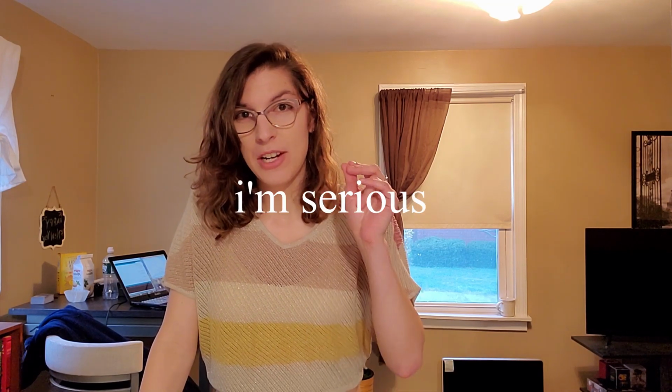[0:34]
I'm very excited because we're about to start building the thermocycler. If you have not seen why I'm building a thermocycler or what project I'm actually working on, I highly recommend you click this video right here.
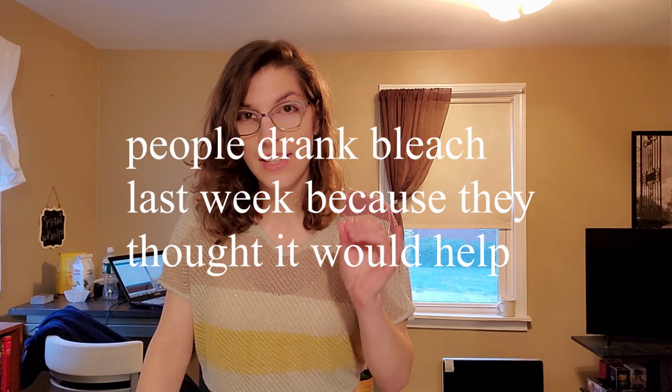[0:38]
Secondly, before we get started, it's important to understand that this is for science and informational purposes only, and only for curiosity. I know it's really exciting at the thought of being able to make a test at home, but that does not mean it should be a substitute for any professional medical opinion. This is the internet, so I want to make sure that everyone is very clear to not try this at home for reasons other than purely for scientific pursuit. Disclaimer aside, let's build this thing.
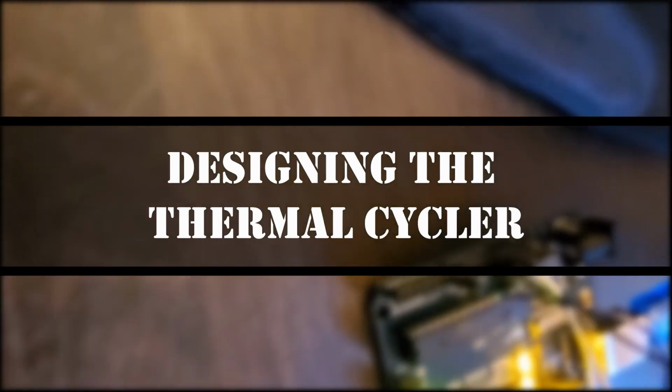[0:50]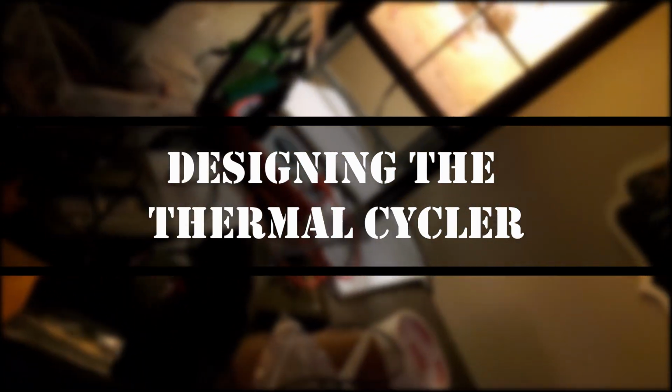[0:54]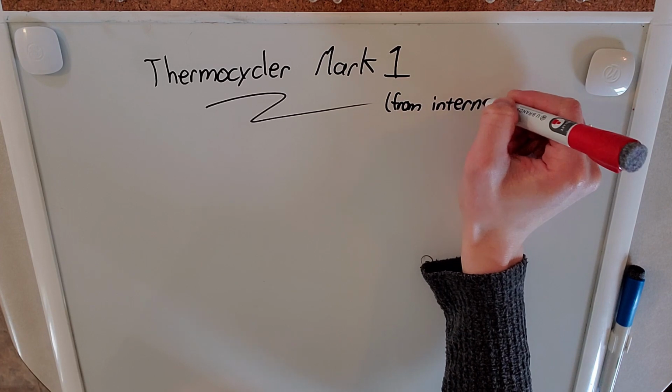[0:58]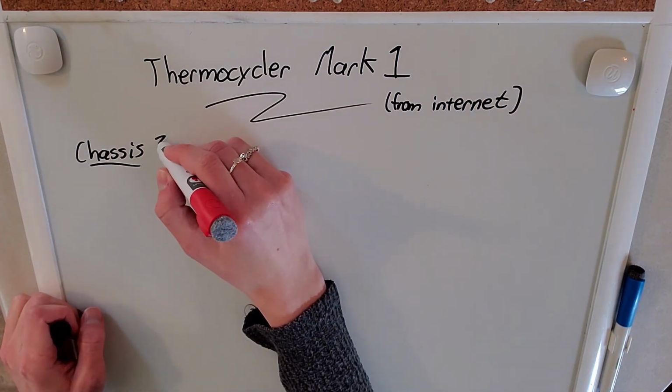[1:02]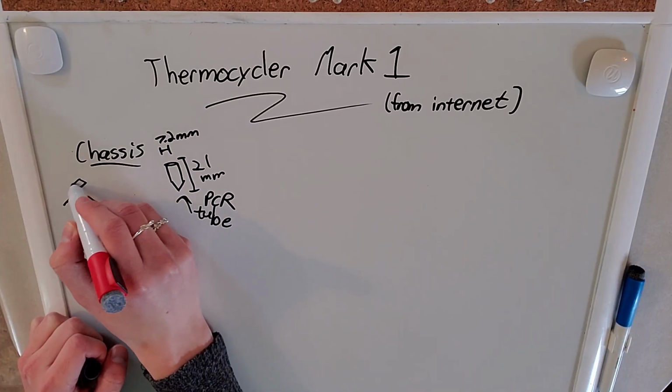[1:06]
Does that not look beautiful or what? So the thermocycler is a machine that goes from one temperature to another very quickly. In order to build this, we're going to need some sort of holder for the test tubes. That's what this chassis is going to be.
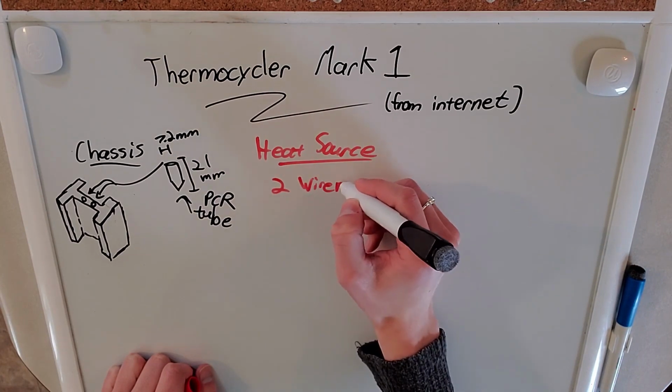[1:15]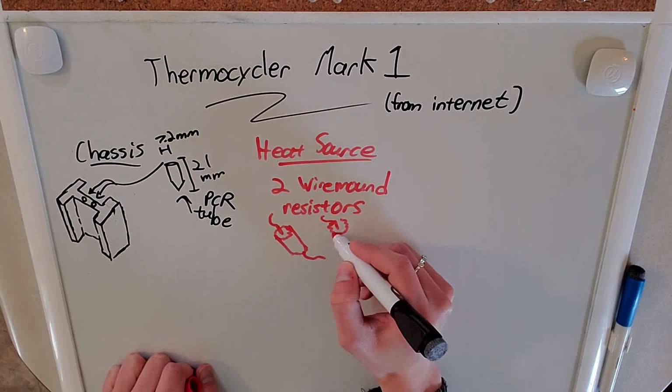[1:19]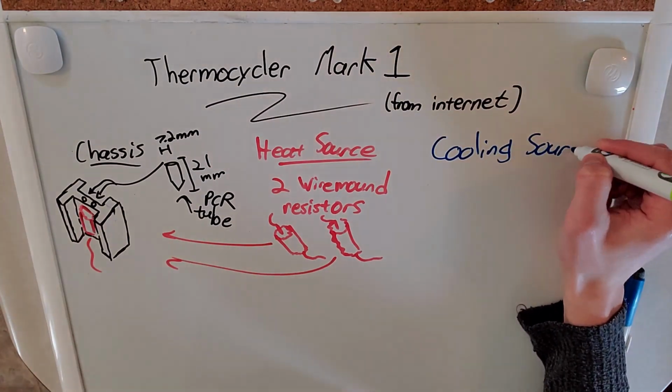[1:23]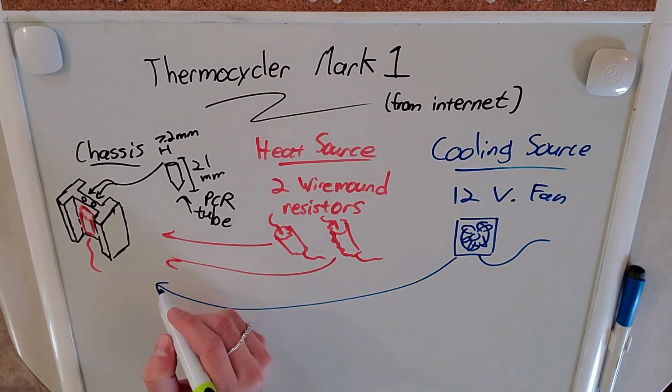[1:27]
It's going to be made out of aluminum, so it conducts heat extremely well, and it's going to have two holes in it to fit both test tubes. In the indents, there's going to be spaces for the heat sources, which are going to be two wirewound resistors. The current's going to flow through those resistors and heat up the chassis. For the cooling, we just have a simple 12 volt fan that's going to provide a bit of cooling.
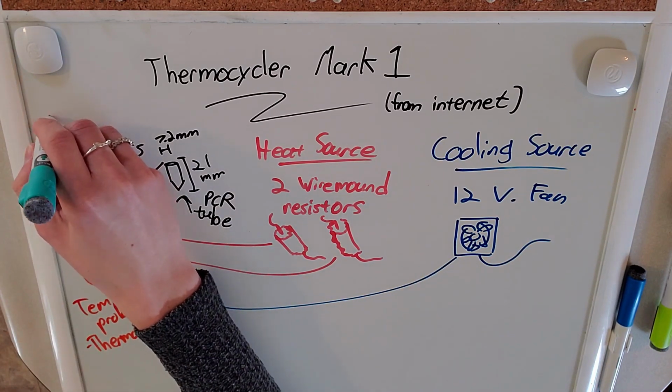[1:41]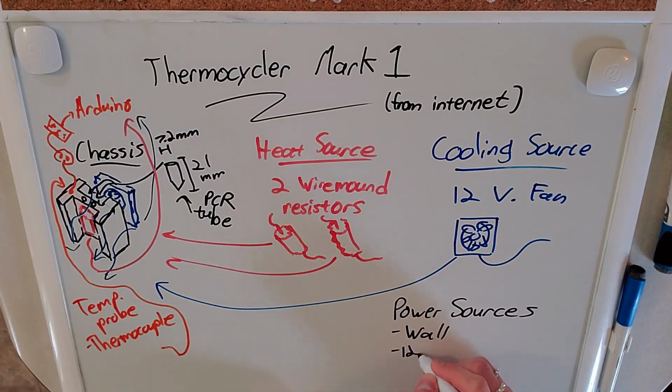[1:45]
Now to sense temperature, we're going to be using a thermocouple soldered into a thermo amplifier. This is going to turn thermal energy into voltage that the Arduino can read. And that's pretty much the entire design. So let's get building.
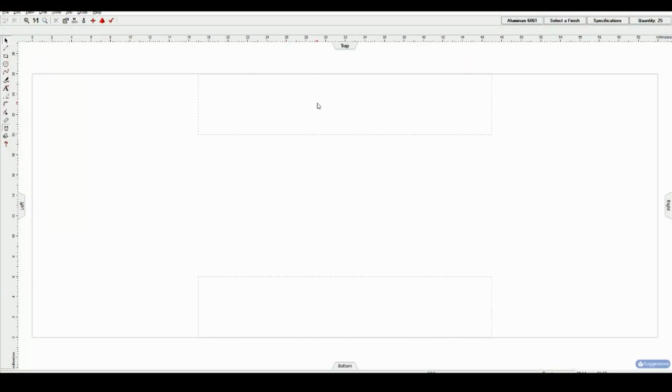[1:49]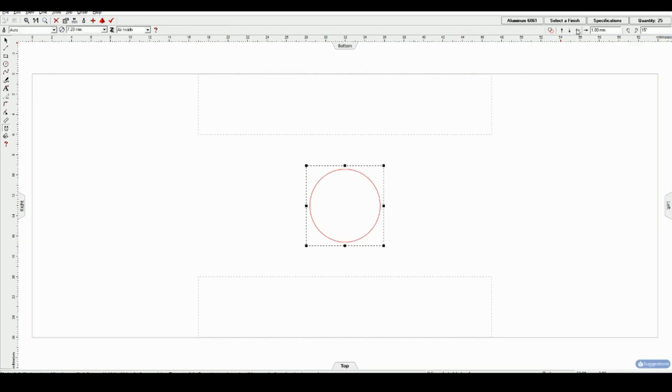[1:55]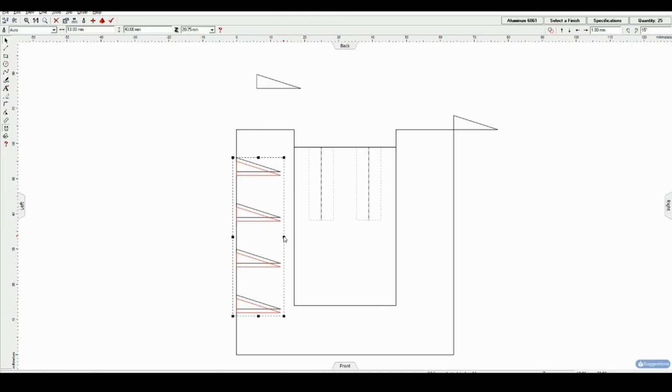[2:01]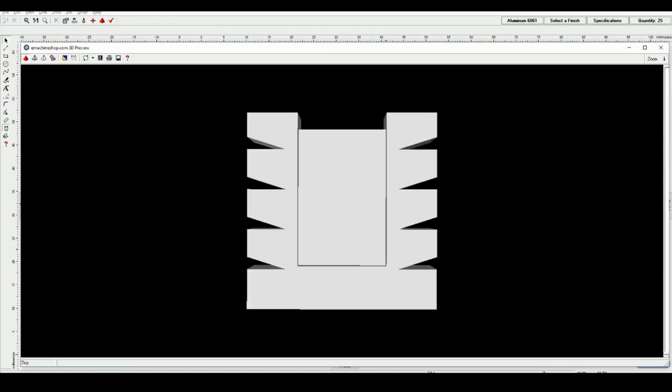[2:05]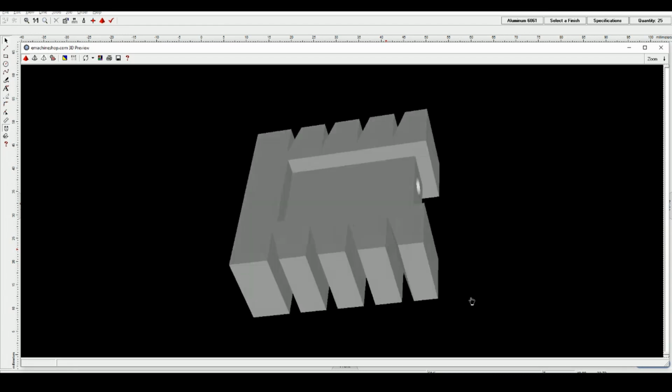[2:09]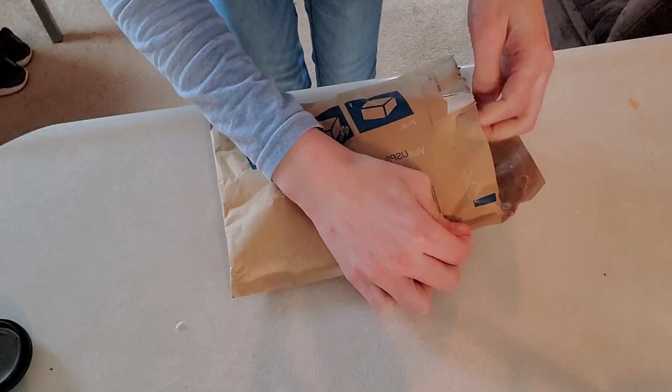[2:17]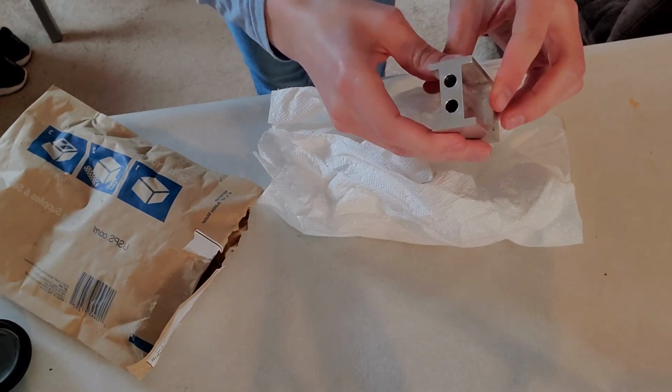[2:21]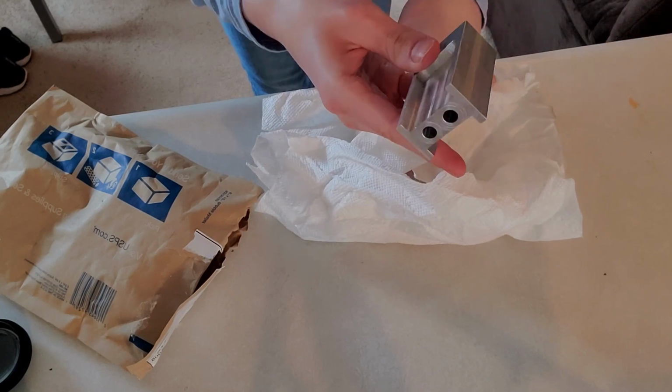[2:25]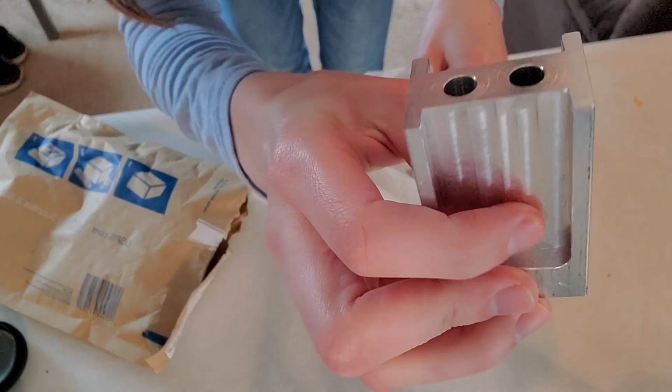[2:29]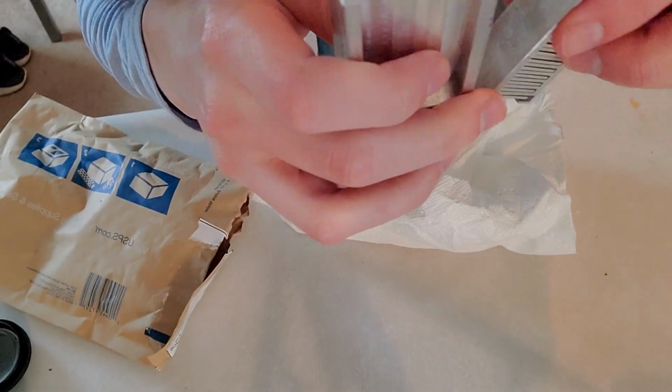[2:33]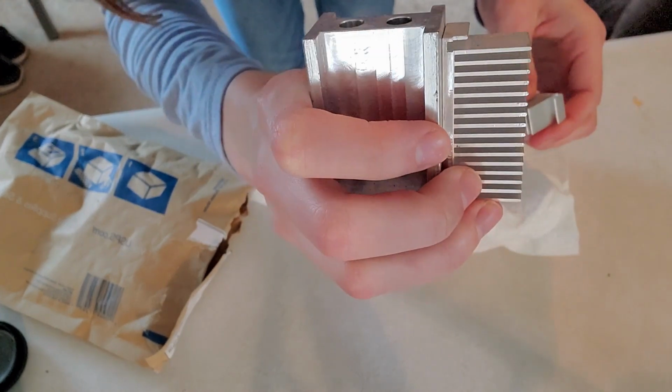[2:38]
Guys, it came in! I'm so excited. Let's have a look at it. Oh, this is awesome. Oh, this is so cool. Look at that. This is where the resistors will go. This is where the tubes fit in. And this is where the heat sinks will go.
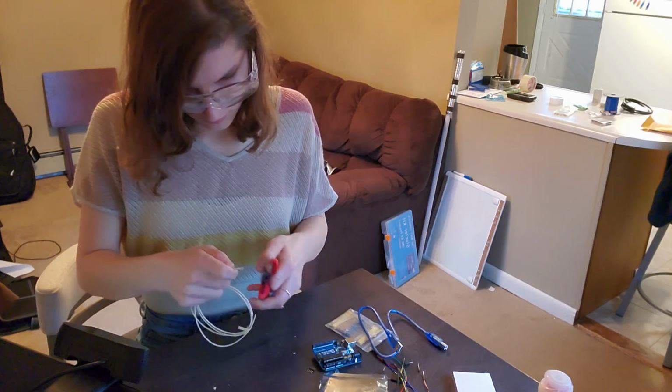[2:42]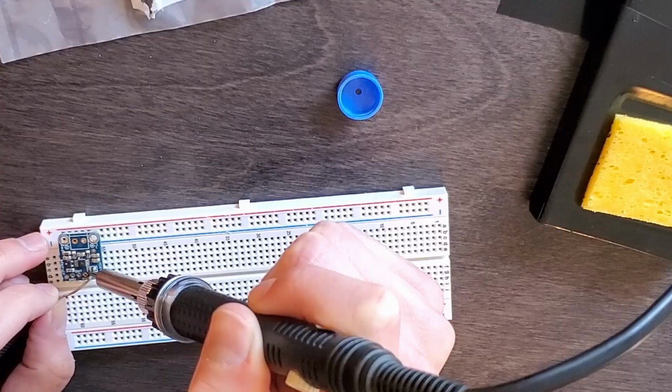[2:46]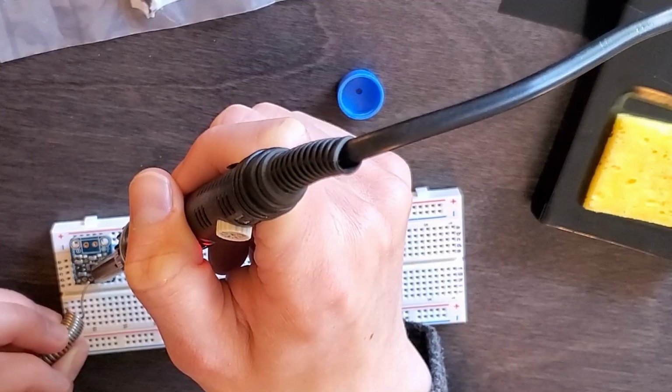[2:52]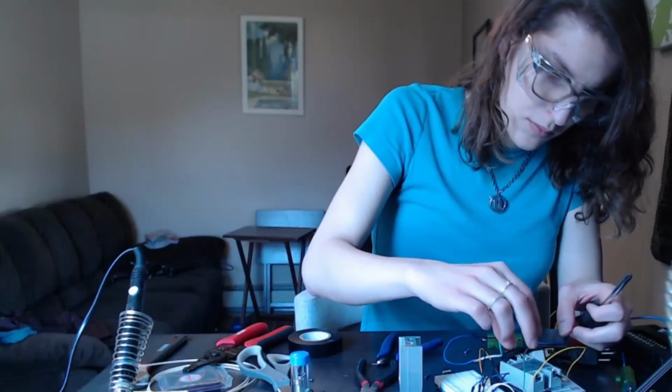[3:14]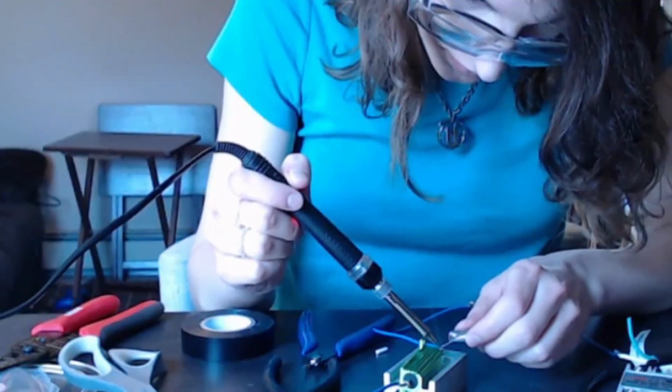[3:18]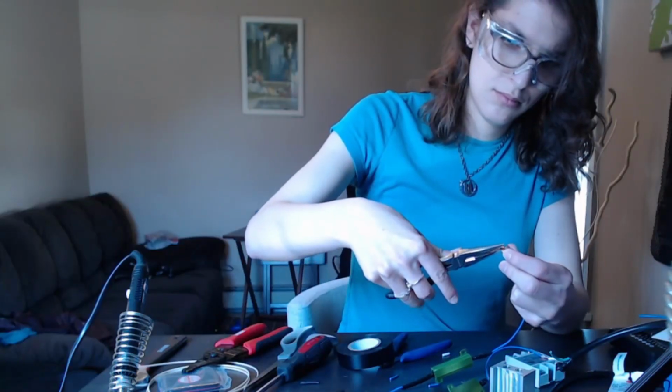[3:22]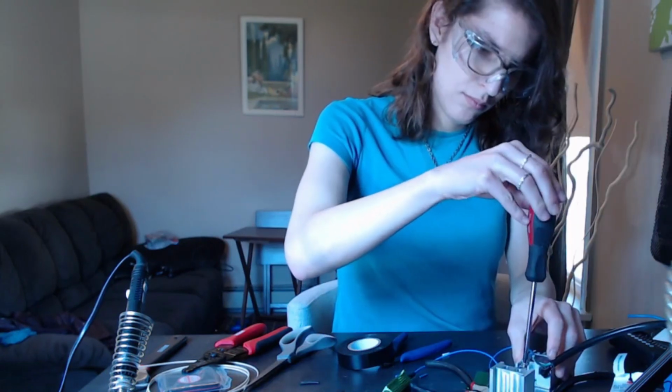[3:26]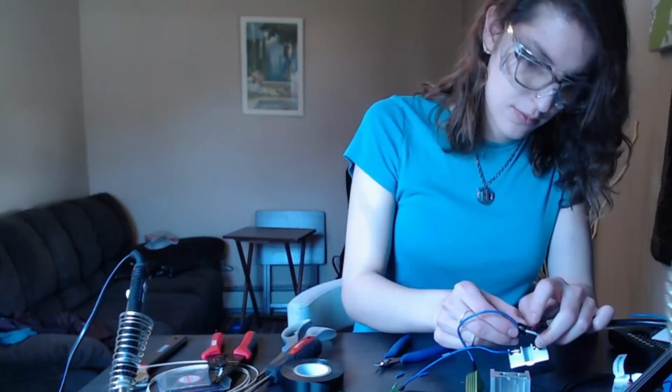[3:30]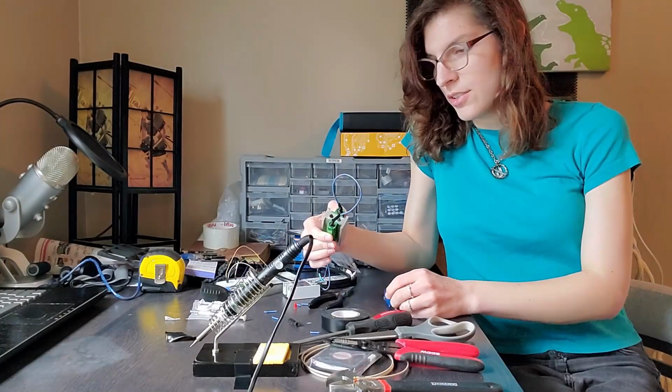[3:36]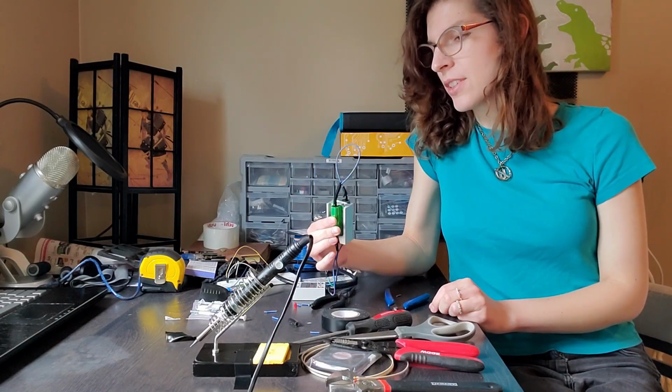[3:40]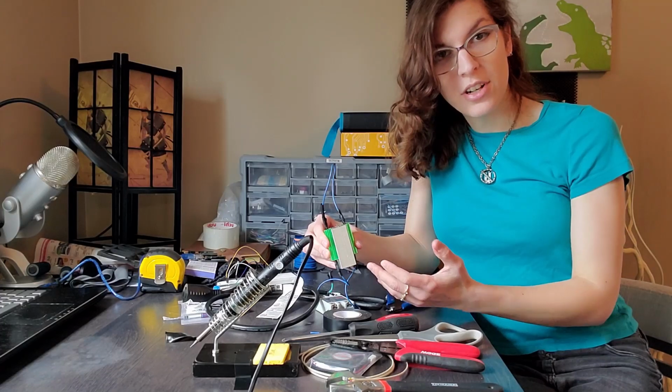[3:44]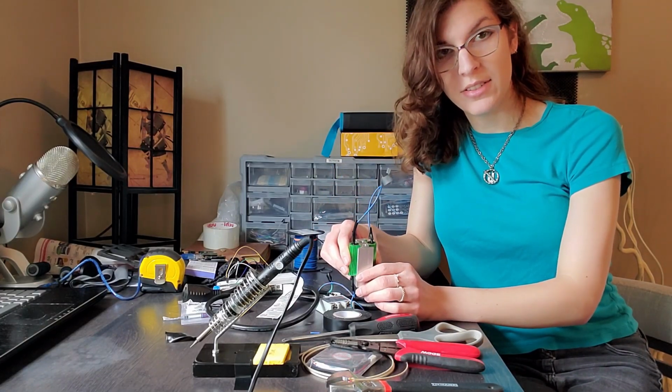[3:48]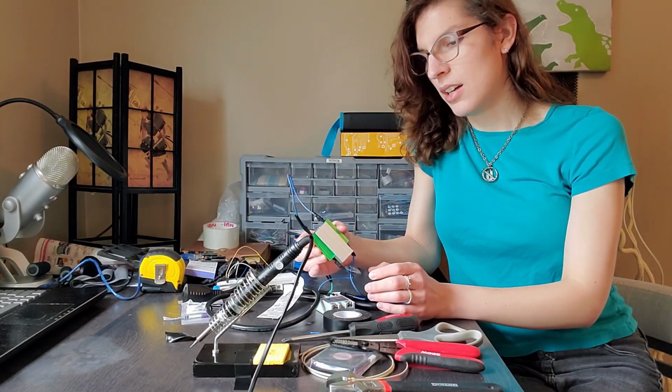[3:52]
As I was finishing up the construction on the resistor circuit, I realized there was trouble in paradise. Okay, so here's the thing. The more I'm building this, the less confident I am about it actually working. Traditional PCR machines increase the temperature by around 5 to 6 degrees per second. Using just two resistors to heat this thing up, I ran the numbers and it's not going to work.
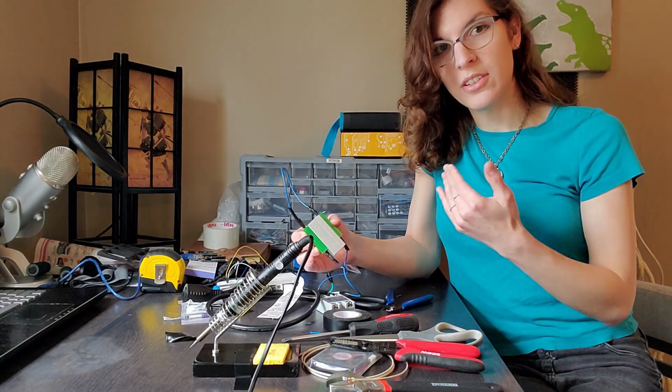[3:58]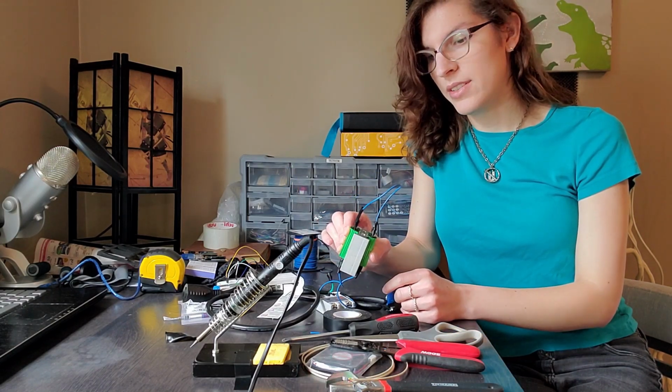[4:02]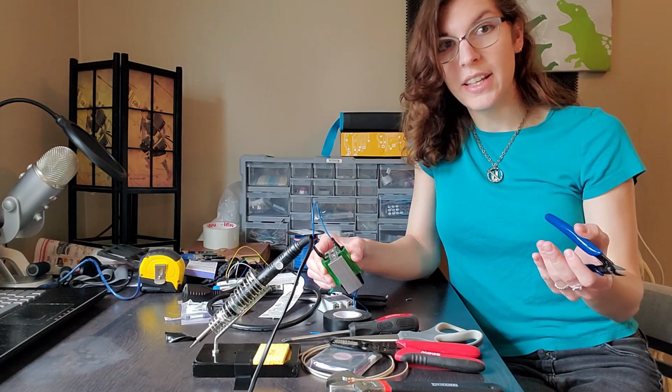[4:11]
I also looked on the blog post page and it said that the entire cycle time for this particular development was close to 3 hours, and traditional PCR machines take 45 minutes. This isn't just, oh, it'll take longer and that's fine. The reaction will fail if it takes too long. If the temperature doesn't ramp up or down the right way, you're not going to have the best and most consistent replication of your DNA.
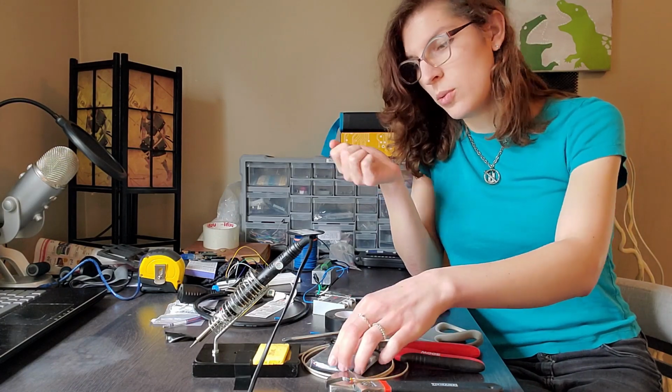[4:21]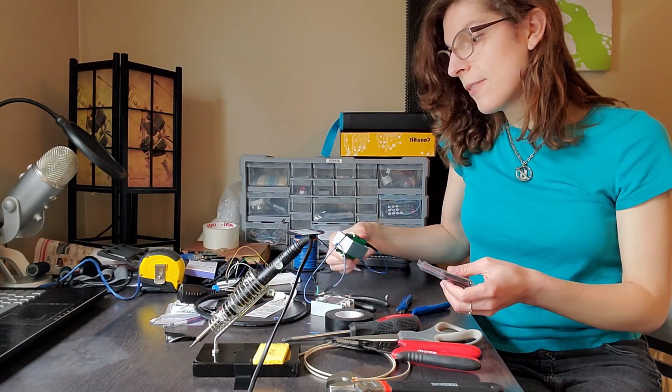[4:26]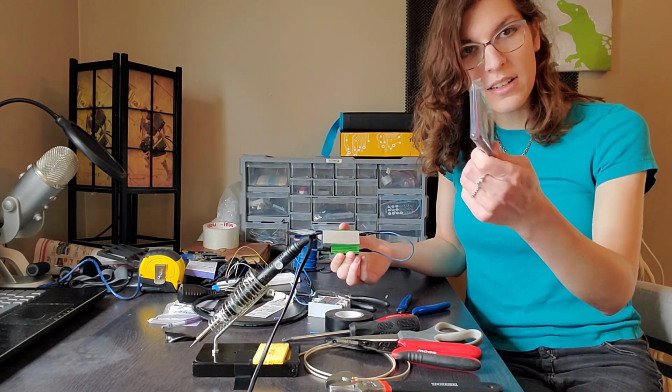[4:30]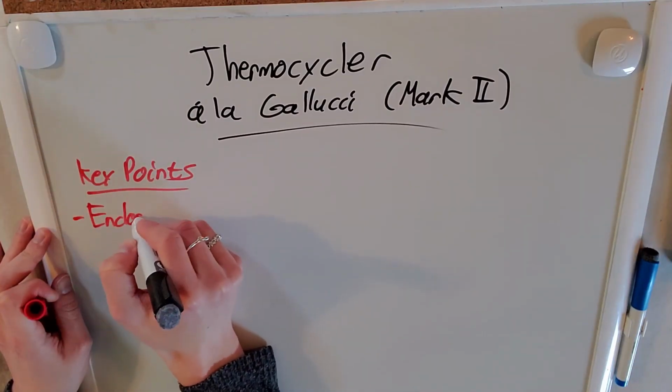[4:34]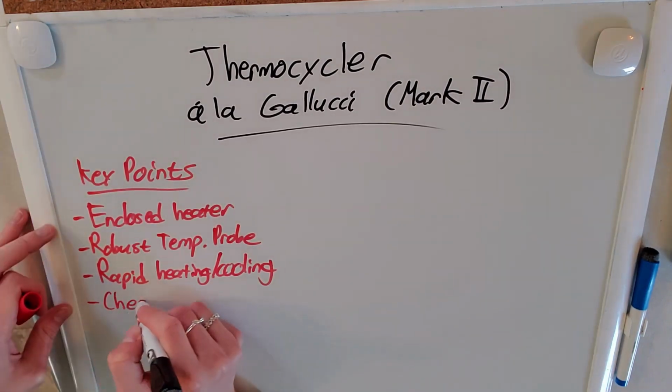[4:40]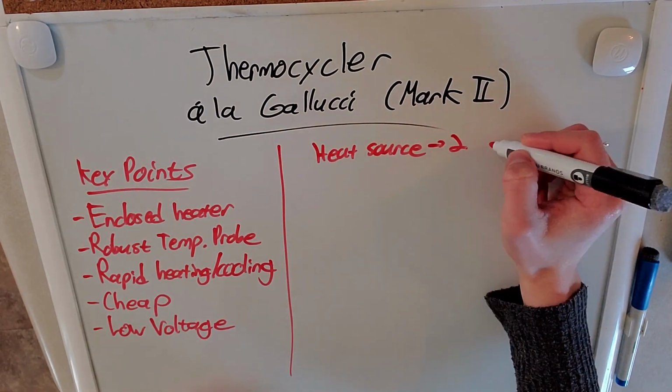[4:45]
The other problem is the cooling. There is no way you're going to be able to cool something 5 to 6 degrees per second that's this size with a fan. Okay, to the whiteboard, I guess. And so with that, I tried to fix some of the thermodynamic issues that I had found with the original design. By enclosing the heaters in the metal, we get a more efficient temperature conversion. And by using a thermistor instead of a thermocouple, we could have a more robust temperature probe.
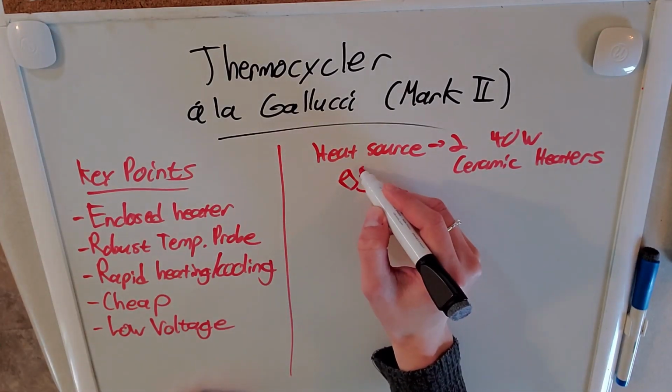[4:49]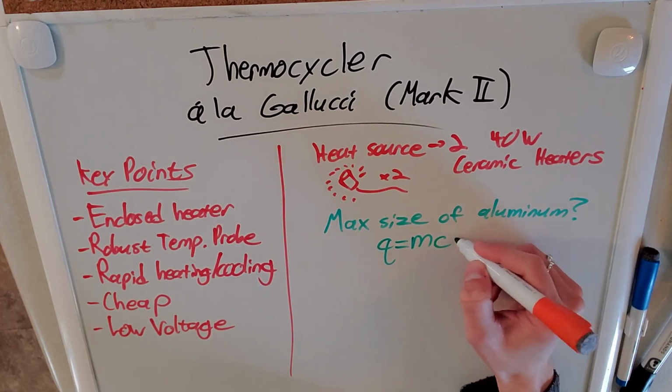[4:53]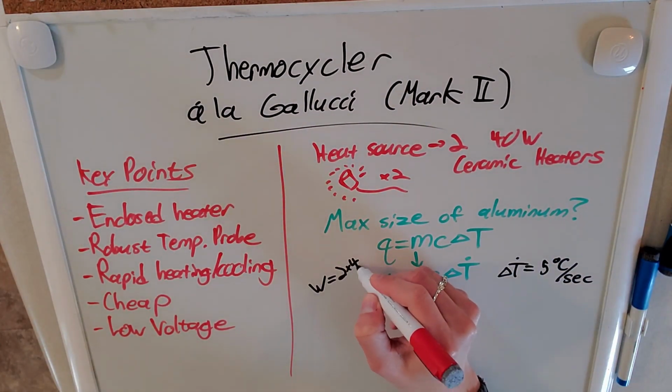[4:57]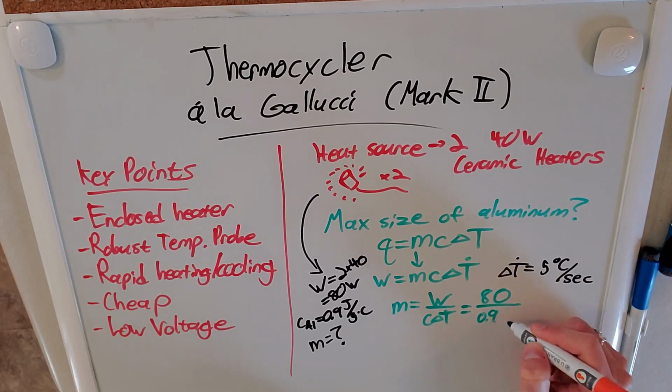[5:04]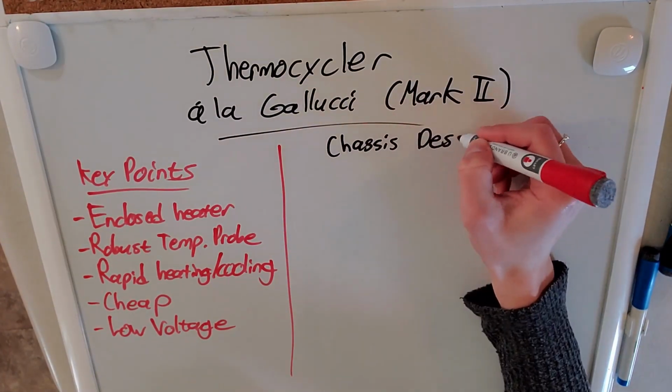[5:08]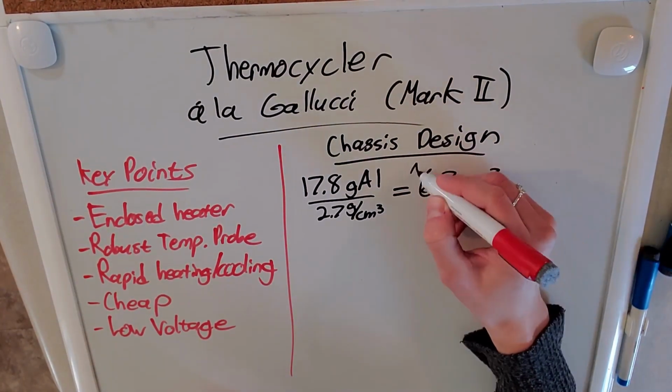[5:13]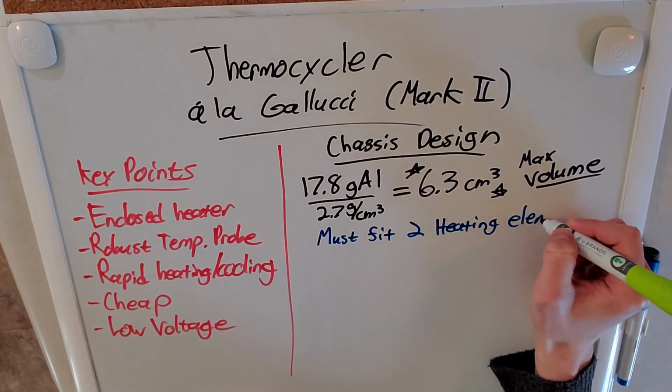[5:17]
Now, to determine the rapid heating and cooling rates, I decided to use two 40-watt ceramic heaters. But we need to first figure out how much aluminum was needed to actually be able to get that 5-degree temperature increase per second that we were looking for. Once we found out how much aluminum we needed, then we had to translate that into how much volume of aluminum our chassis could be, which we used the density of aluminum for. That was pretty easy.
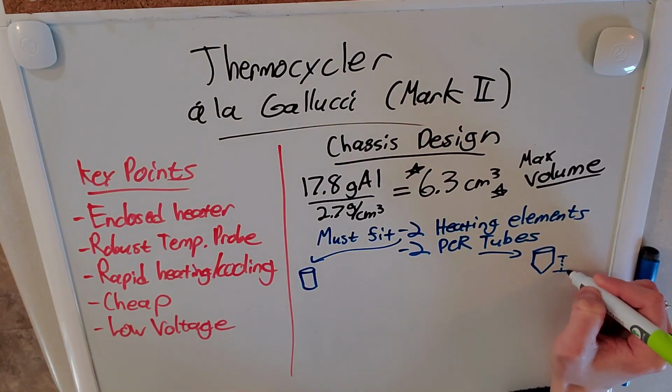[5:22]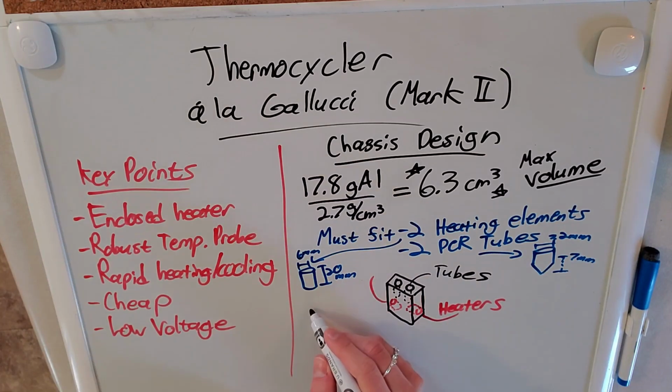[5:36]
Lastly, we just had to make sure that that volume of aluminum could be designed in a way that fits both of our heating elements and two PCR tubes. Taking the measurements of the heating elements and the PCR tubes, we found out that a very, very small block of aluminum, on the order of tens of millimeters, could actually house both the heaters and the tubes while satisfying the volume requirements that we found out using our heat transfer equations.
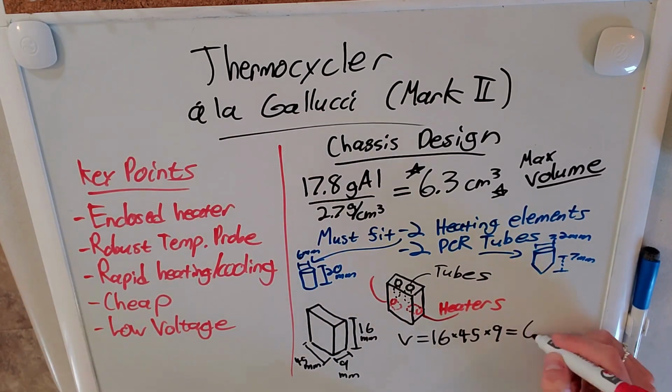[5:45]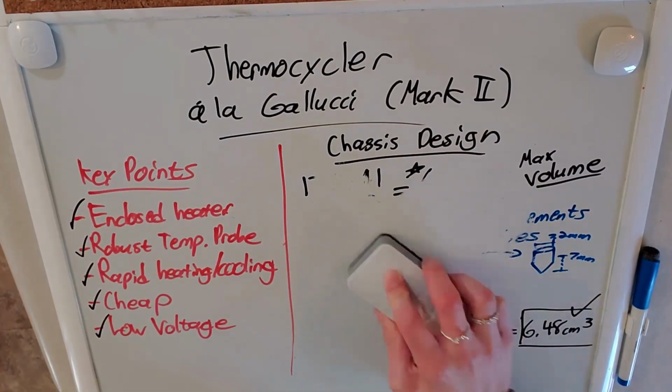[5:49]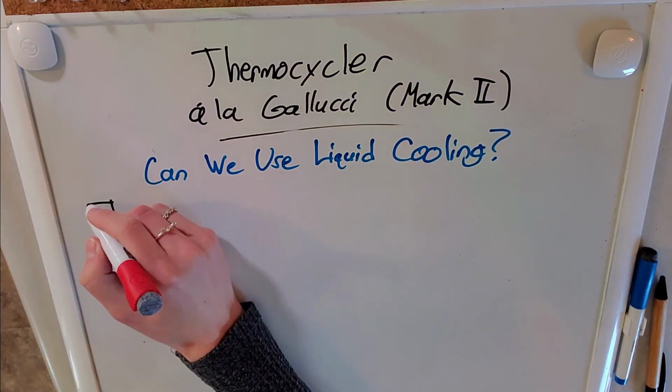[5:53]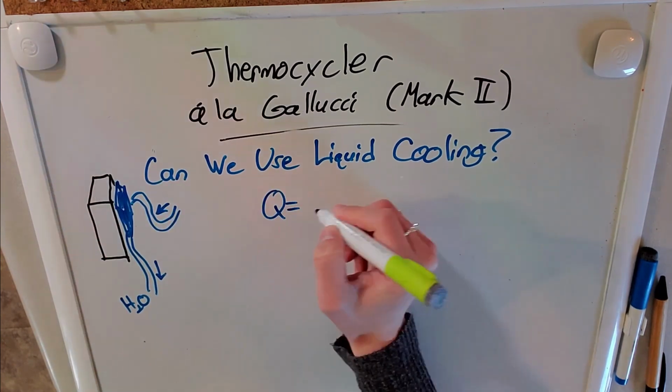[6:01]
Well, we took care of the heating, but how about the cooling? Like I said before, a fan wasn't going to cut it. I decided to use liquid cooling instead. We could take a CPU heat sink and pump cold water through it, and that would take away way more heat than we ever could with a fan.
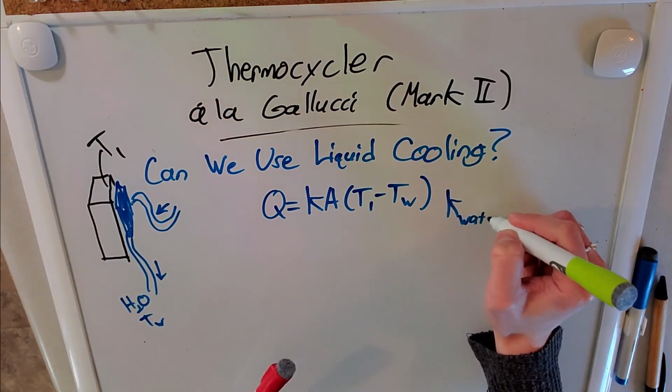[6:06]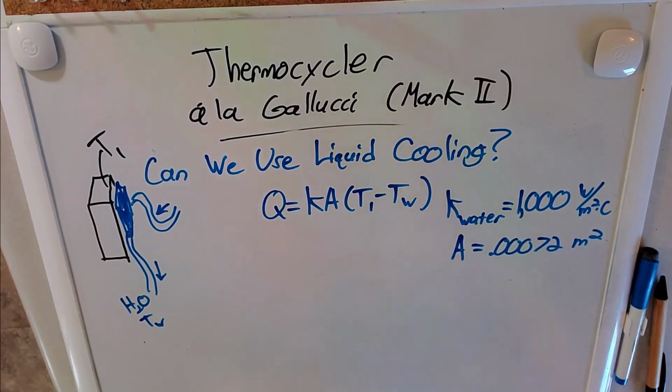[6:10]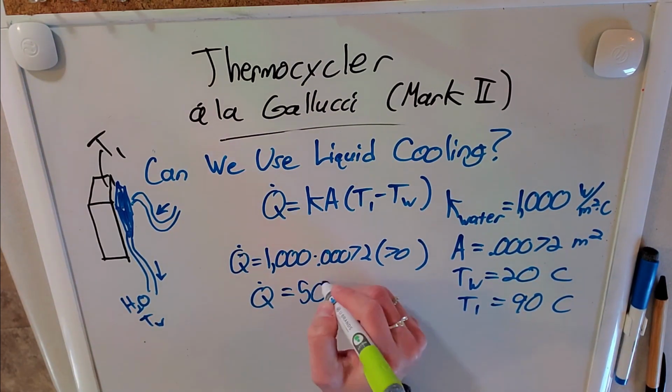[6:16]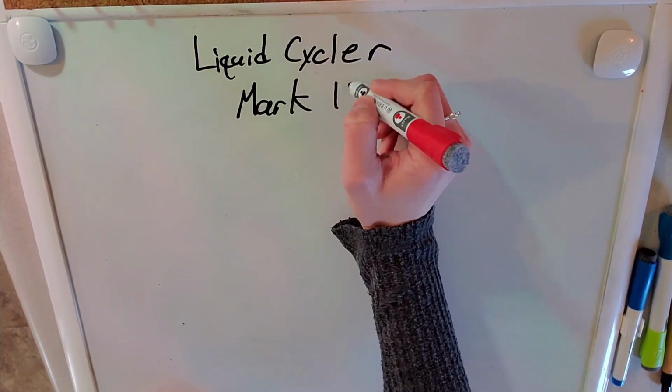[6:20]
Just to confirm that using a liquid cooling system actually gave us the right amount of heat, I just had to confirm that the heat it took away is roughly the same as the heat that the heaters would give to the aluminum block. And with that, my design for the PCR machine I call the liquid cycler is complete.
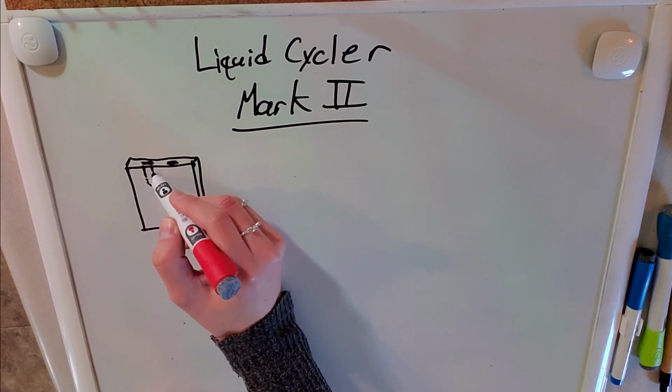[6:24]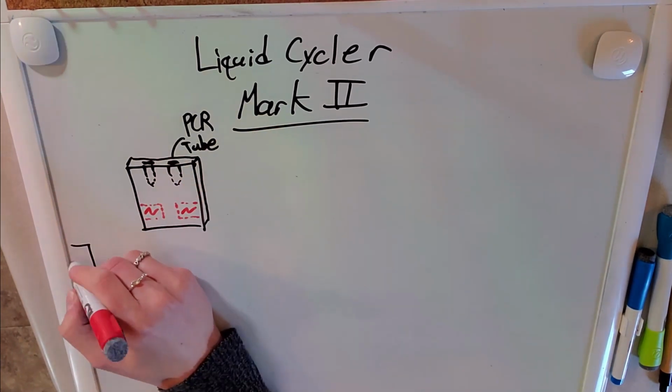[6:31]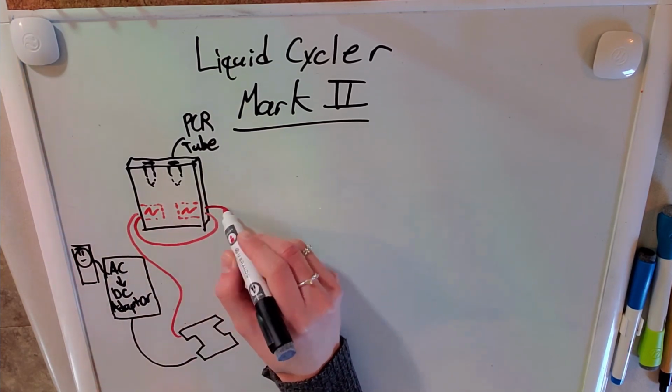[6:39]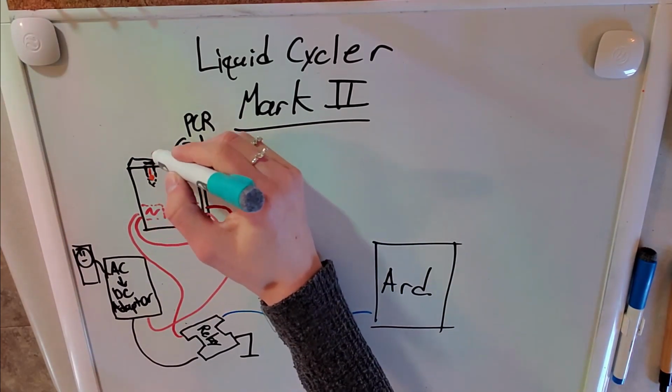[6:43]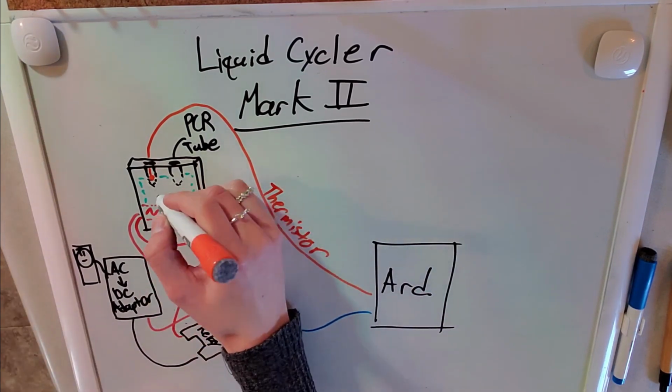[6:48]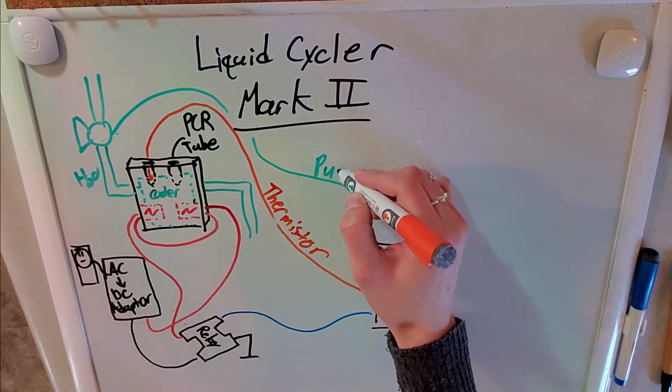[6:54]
So it's going to be a much smaller aluminum block than we had before, and the heaters are going to be inserted inside the block rather than just sticking off the sides. It's still going to hold two PCR tubes, which is good, and all it's going to use is an AC to DC adapter attached to a relay to power the heaters. The Arduino is going to handle all the decision making, the thermistor is going to be inside one of the PCR tubes, and the liquid cooling system is going to be glued to the side. So, with this basic design, let's go back to the real life me to construct it.
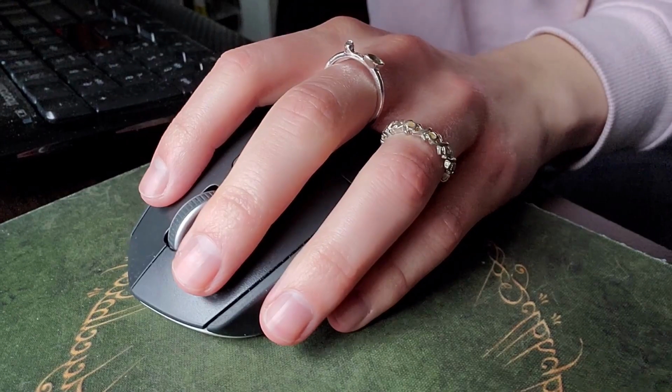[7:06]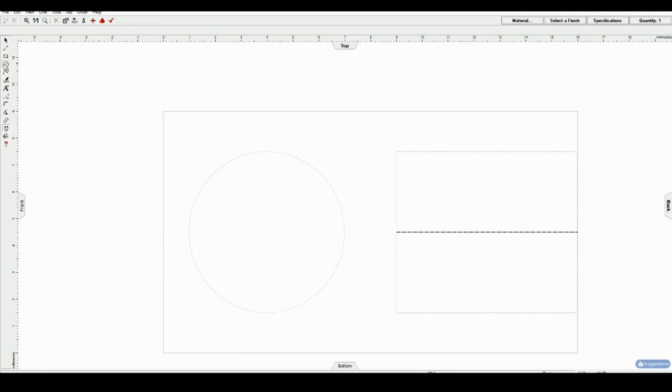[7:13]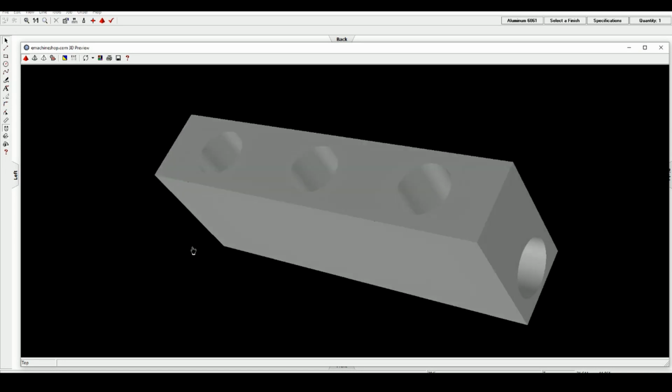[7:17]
This is what I actually look like, by the way. I decided to have three holes for the PCR tubes instead of two, because that'd be less aluminum to have to heat up, and also we could put the temperature probe in the middle hole.
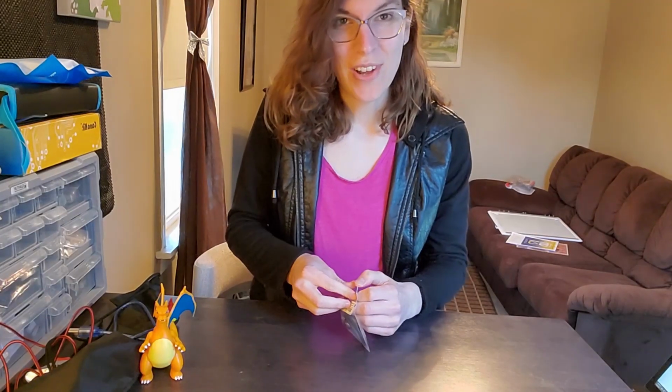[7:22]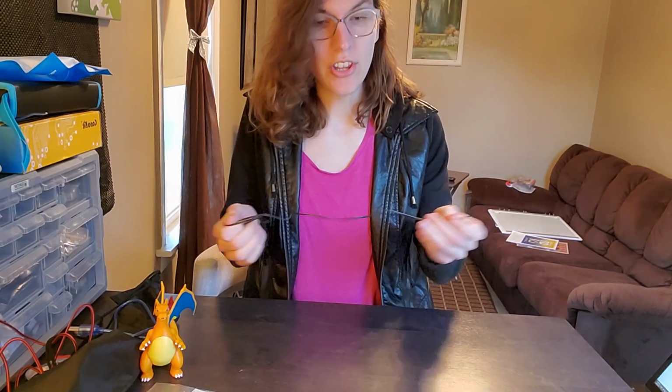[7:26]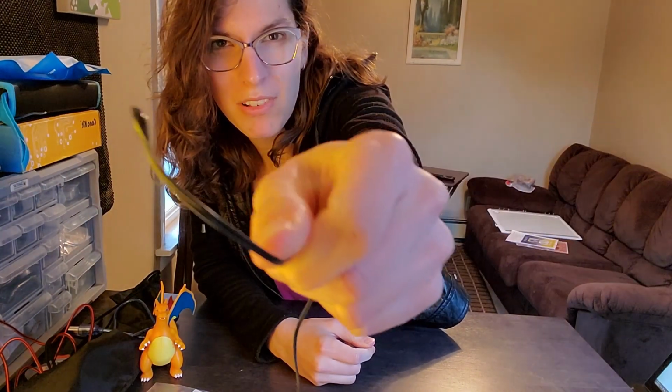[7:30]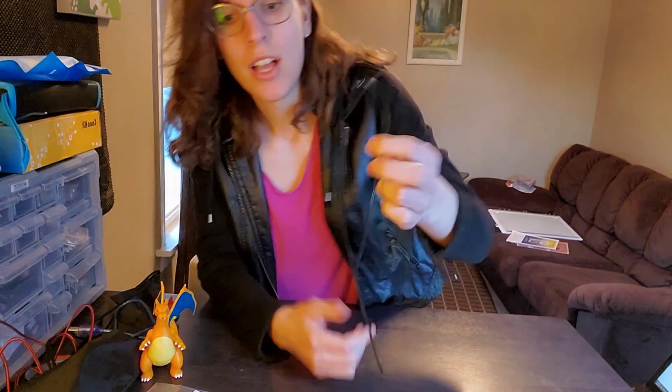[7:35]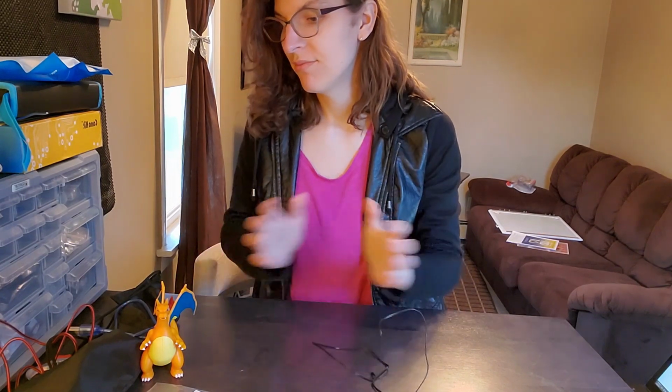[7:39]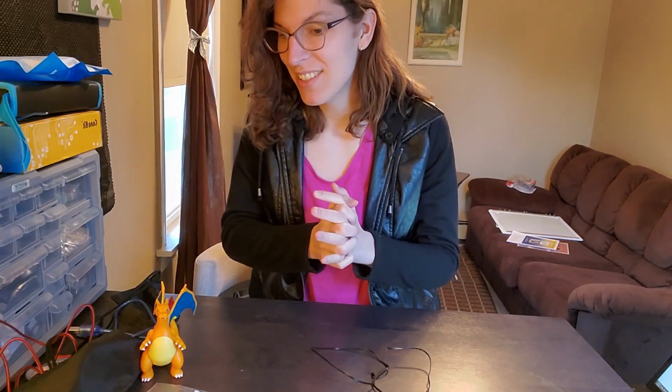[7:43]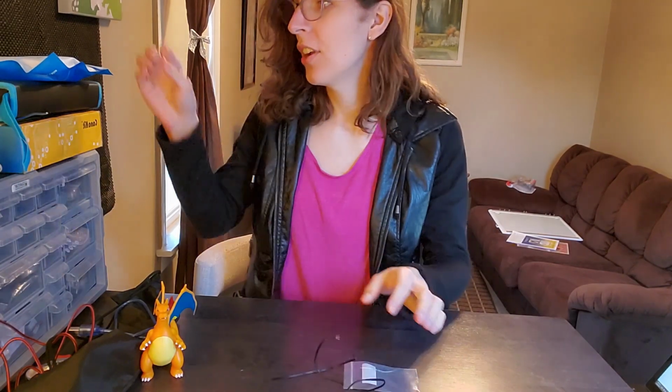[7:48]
All right, so I got the temperature sensor in. It's called a thermistor. Looks like this. It's this little bulb, which changes the resistance of your circuit based on temperature, which is great. So now we can use that with the resistor, put it all up in a breadboard, and get this party started.
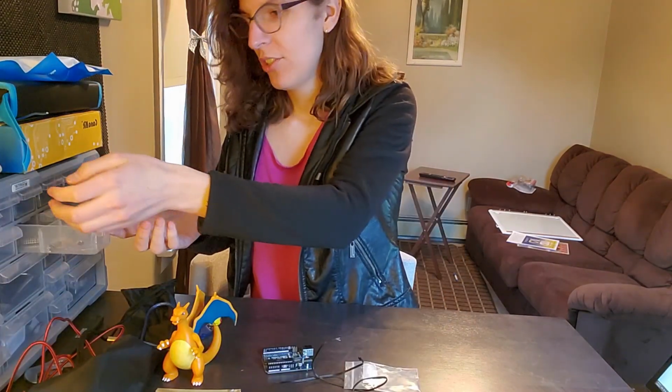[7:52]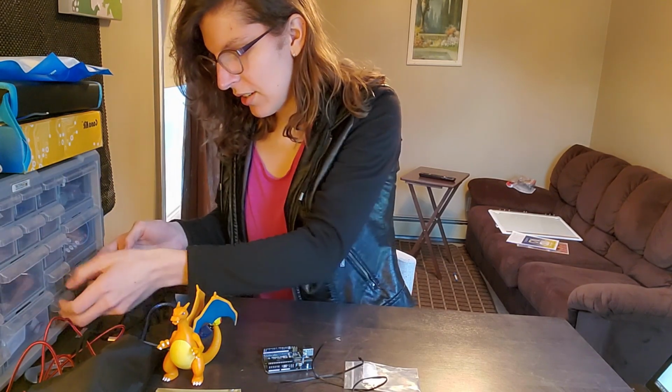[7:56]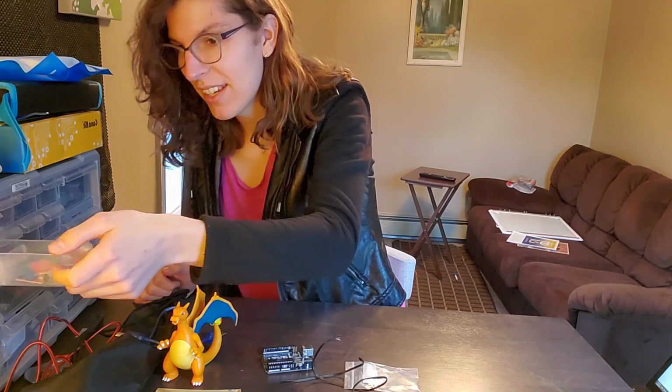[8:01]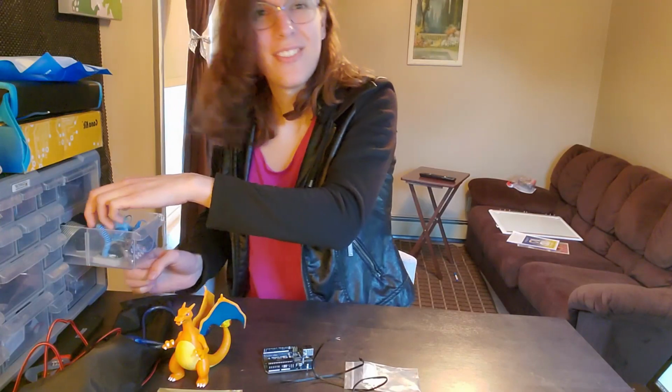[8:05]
I really should label these drawers. So, trying to find something. Wait, is this it? No, found it.
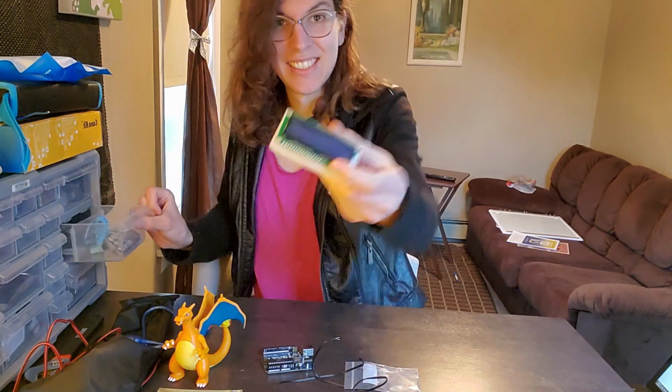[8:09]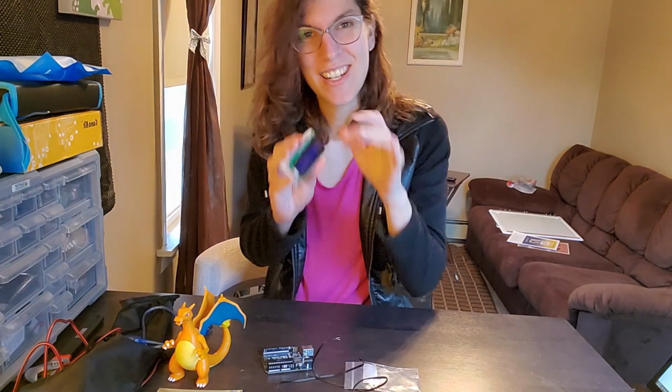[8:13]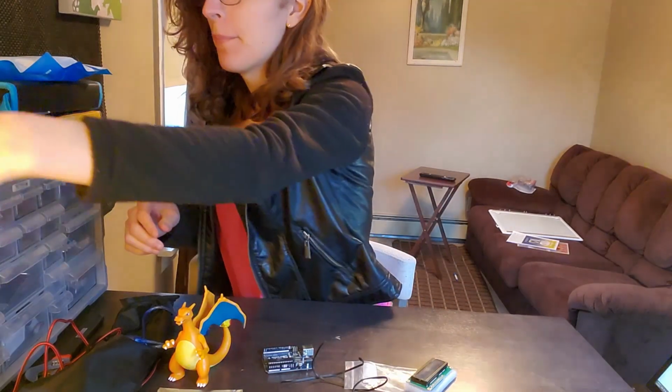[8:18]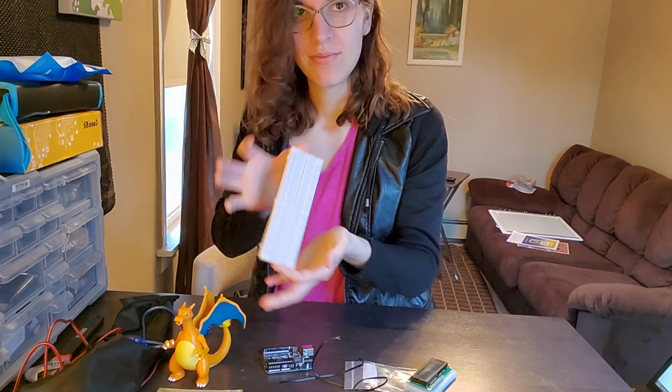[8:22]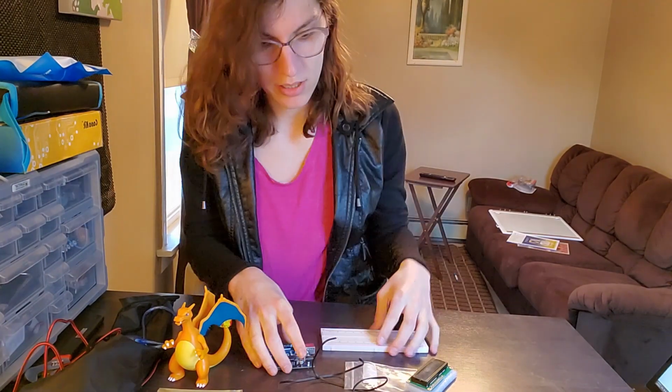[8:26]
This is gonna be where our temperature is displayed, and it's gonna be in nice little numbers, so it's gonna be great. I'm gonna connect that right up to one of these. Let's get cracking, shall we?
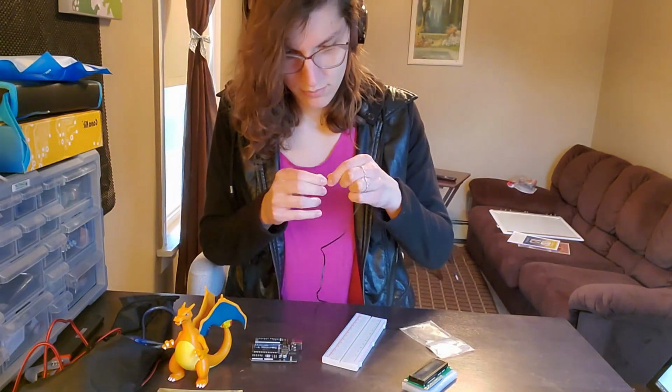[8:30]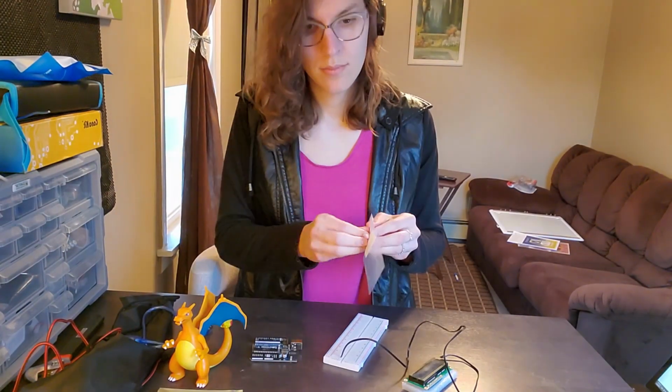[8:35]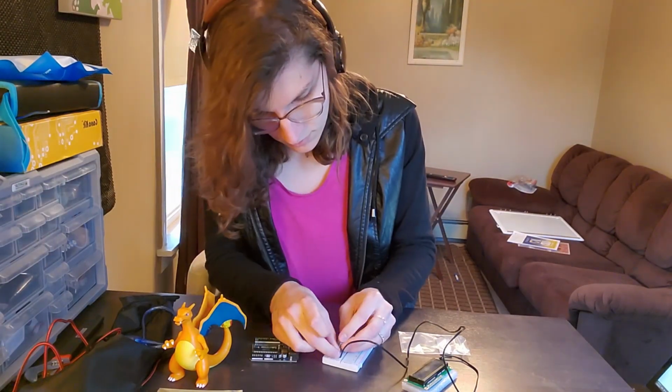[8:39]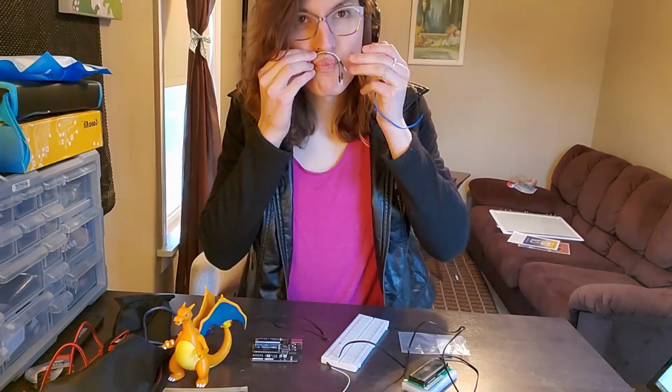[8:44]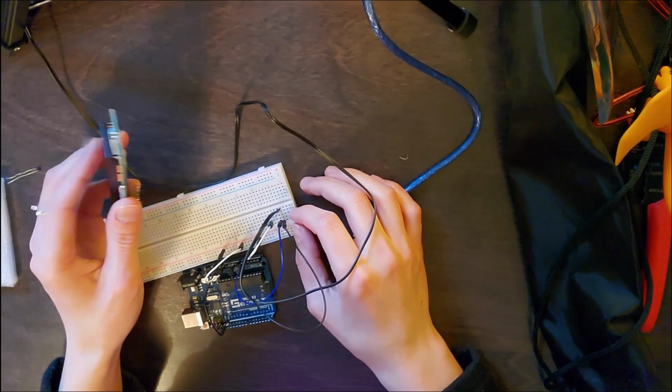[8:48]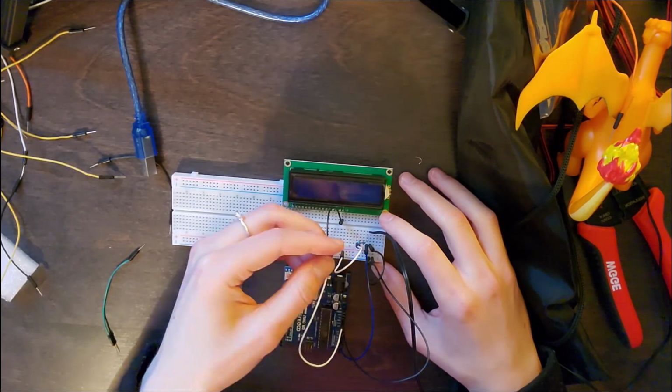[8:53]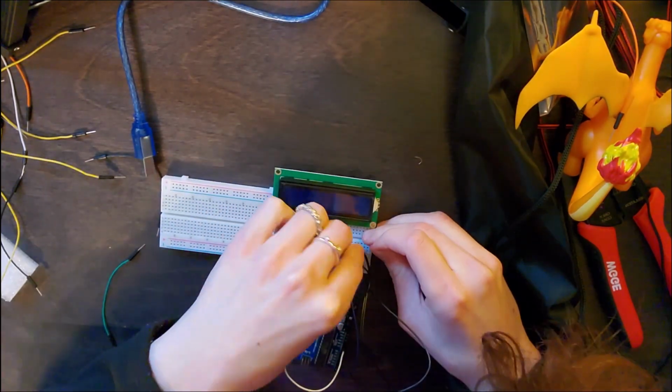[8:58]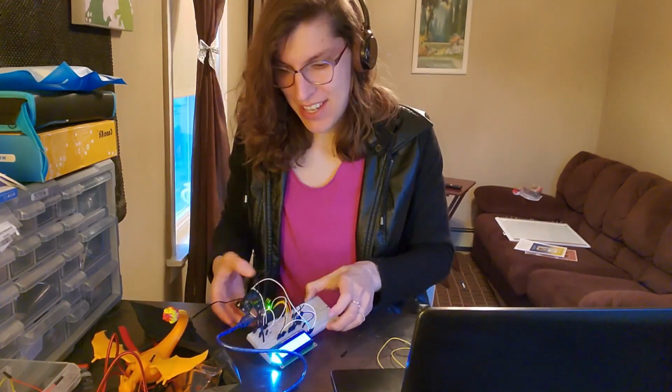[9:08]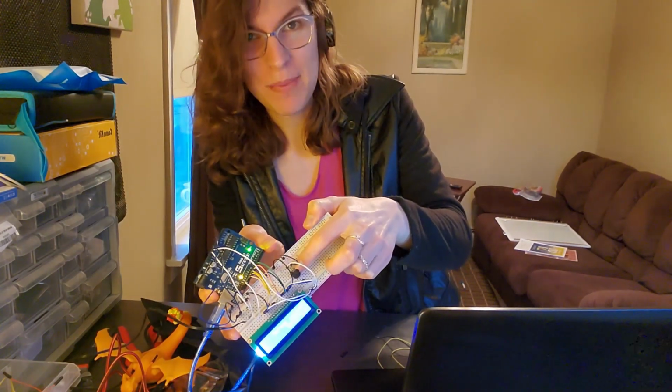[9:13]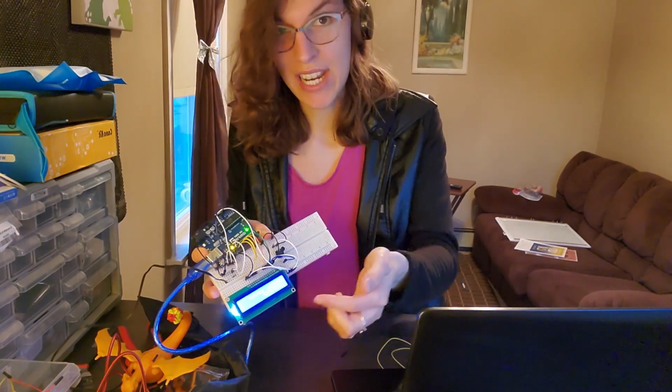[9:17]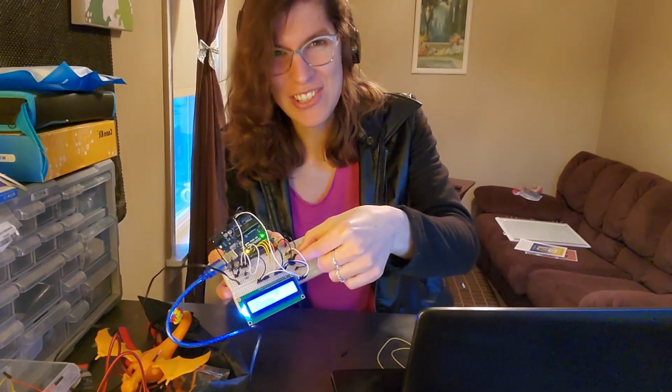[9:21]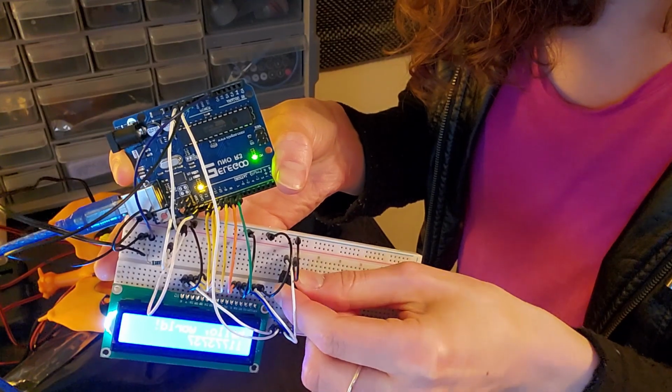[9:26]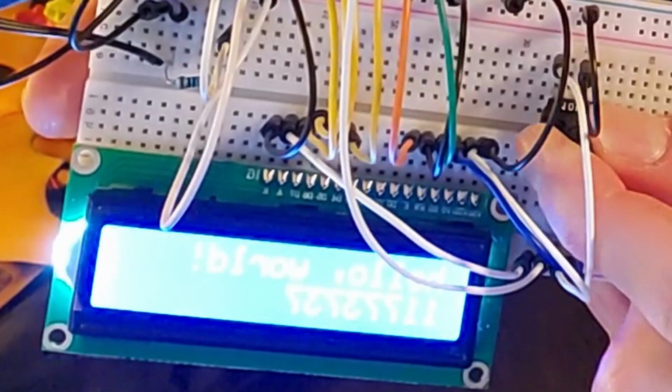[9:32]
Oh my god, so I was trying to figure out why it wasn't working, right? I didn't read the instructions. I never do that. I do that all the time. But there was the potentiometer here, this little black piece, that actually controls the contrast of the screen. So if you stick a knob in here and twist it, it was like a national treasure puzzle. Here, hold on, let me just show you. And that controls the contrast of the display until it's perfect.
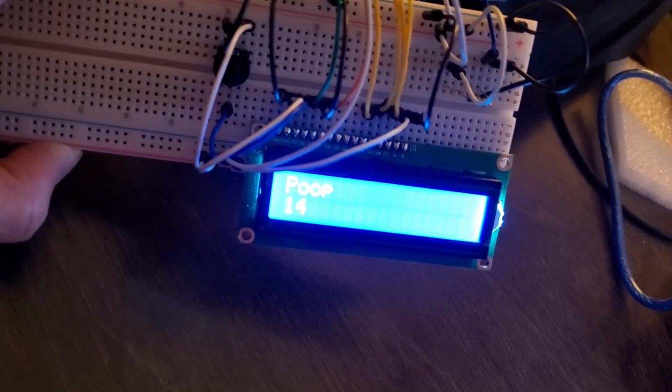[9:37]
Hello world. I made it say poop.
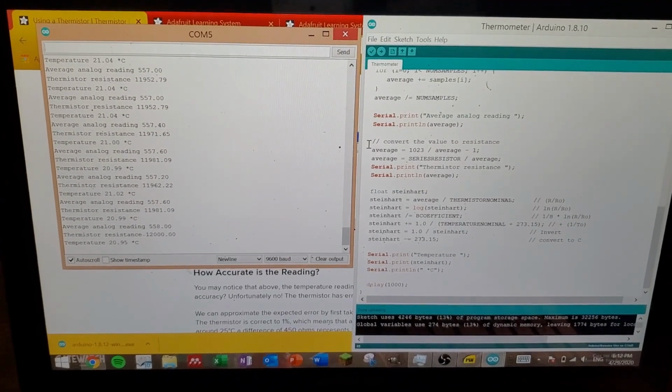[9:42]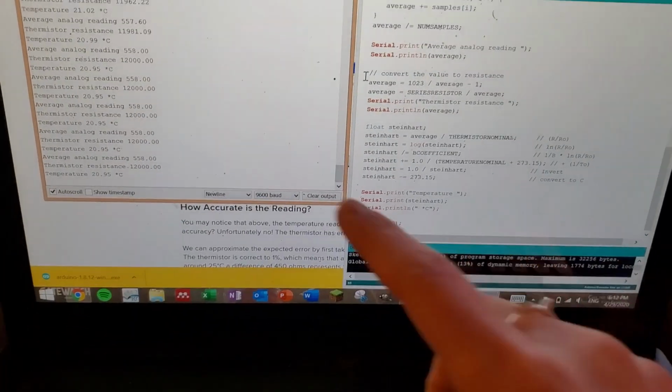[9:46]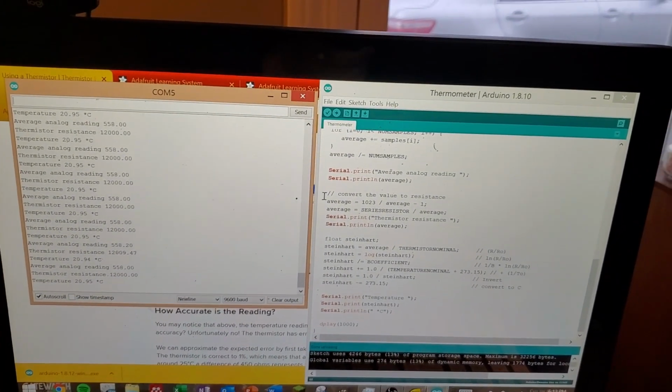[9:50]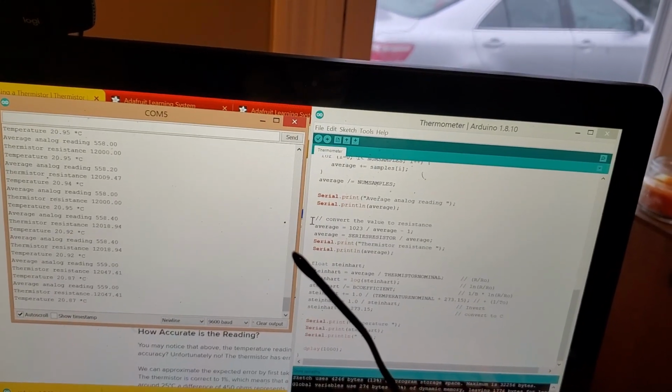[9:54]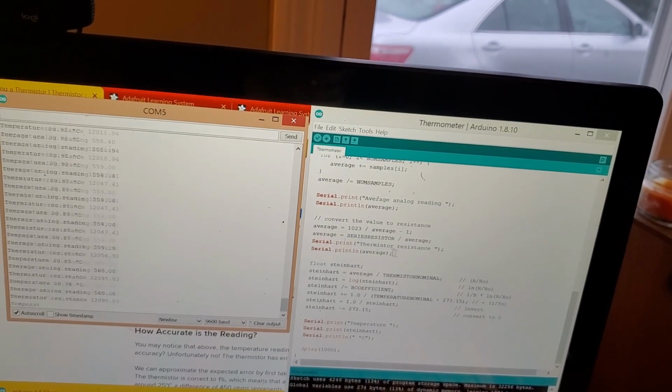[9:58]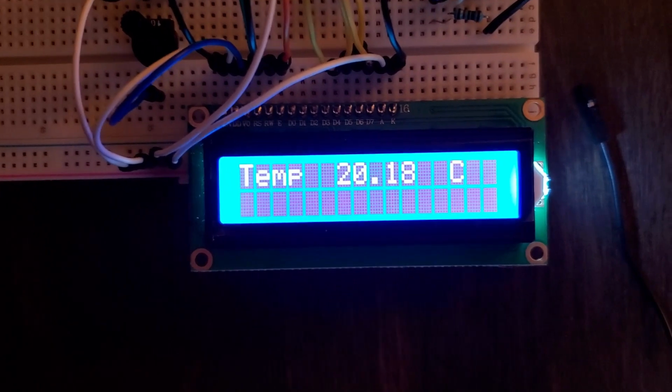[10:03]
Check it out. We got temperature readings that don't look ridiculous. Look at that. 21 degrees, that's room temperature. This thing's just chilling out here in the room. It is 21 degrees and that thing is measuring it. So that is wonderful. With the temperature sensor fully operational, it's time to turn to the heaters.
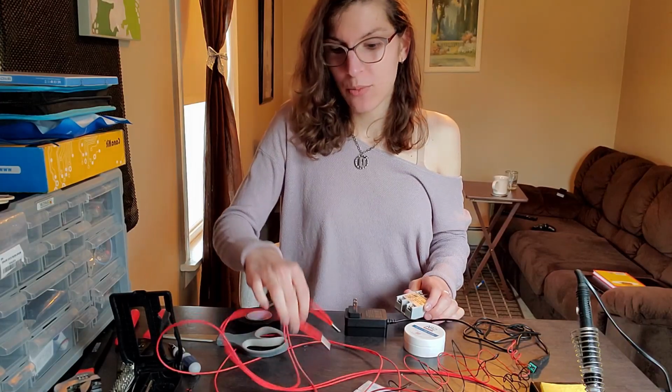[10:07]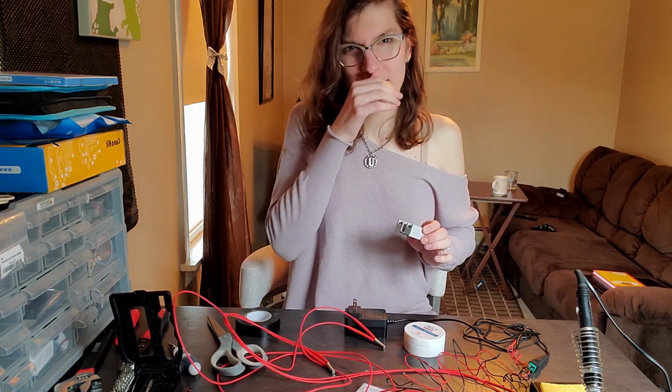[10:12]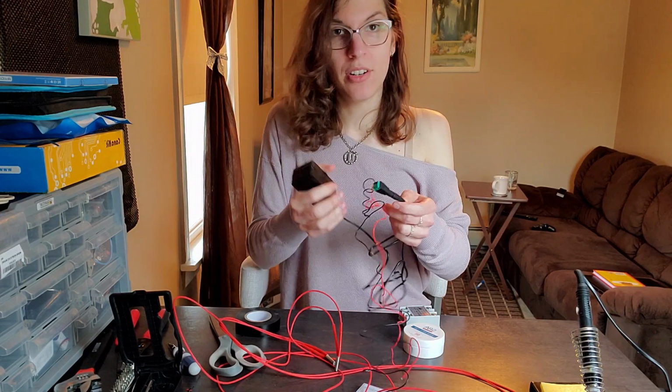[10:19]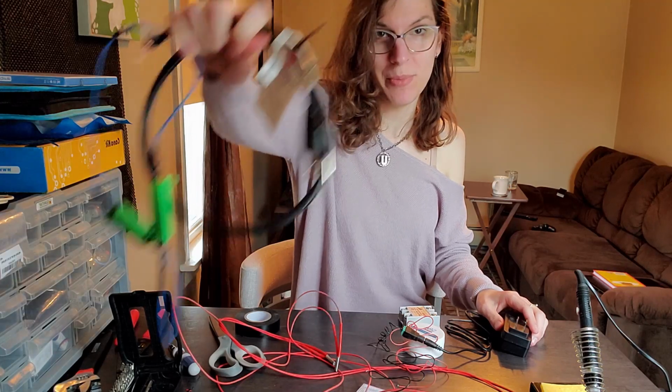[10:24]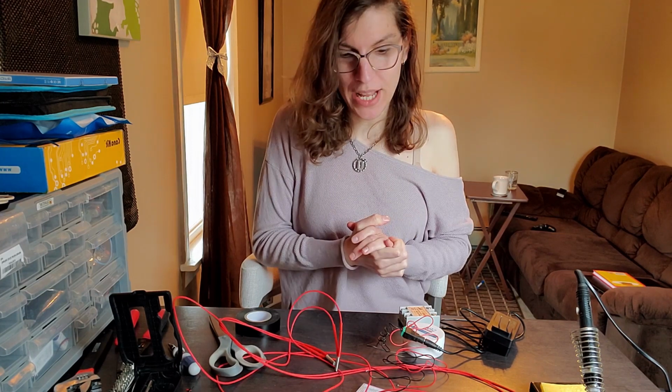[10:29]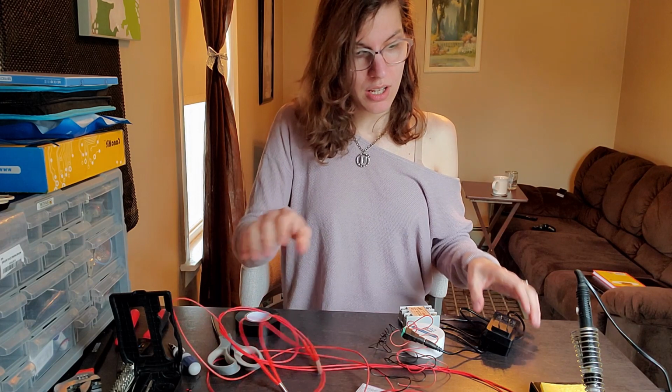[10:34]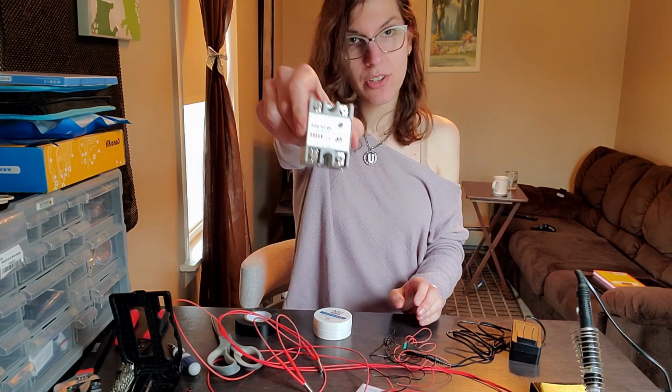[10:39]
Okay, now we're going to start with the heating circuit, which uses two 40-watt heating cartridges. They're super cheap. You can get them for like $10 or something. It works with a 24-volt adapter. You can buy these adapters for like $10 too. They're low voltage. They're safer than the monstrosity circuit we were building over here. And because we redesigned the chassis, they're more effective. So all we have to do is wire these two resistors in parallel with the power source, solder them all together, and then attach them to the relay.
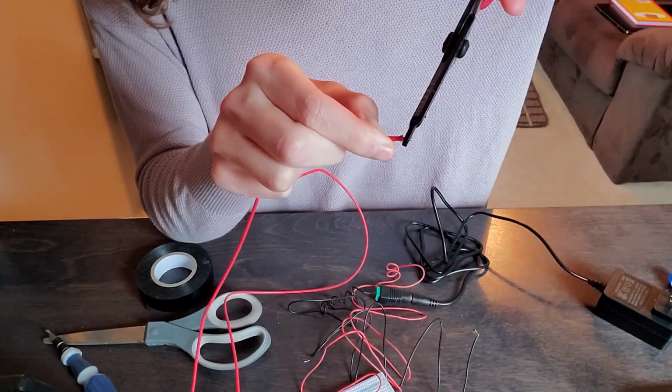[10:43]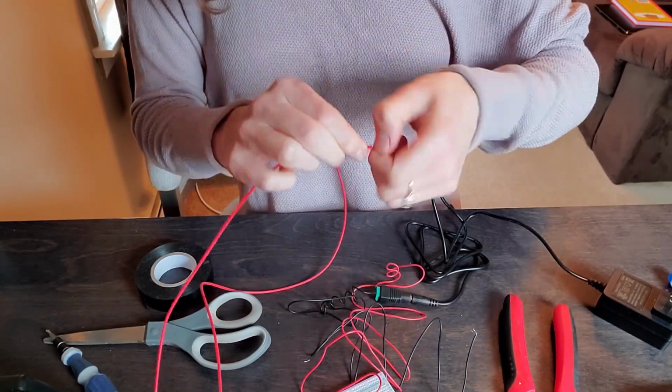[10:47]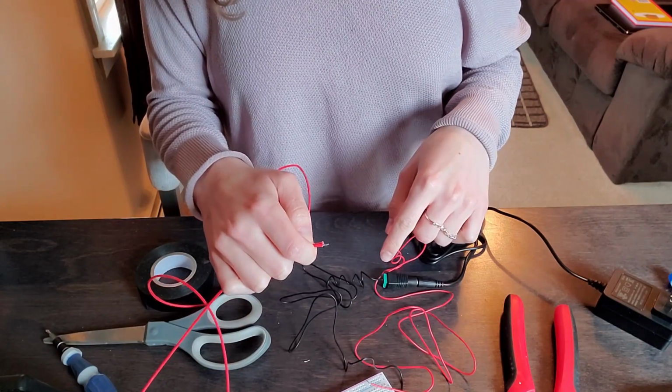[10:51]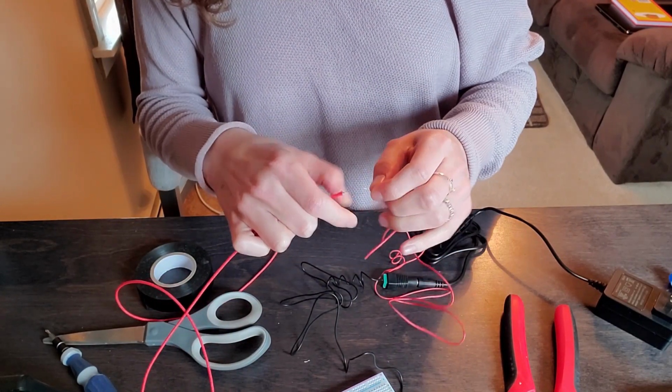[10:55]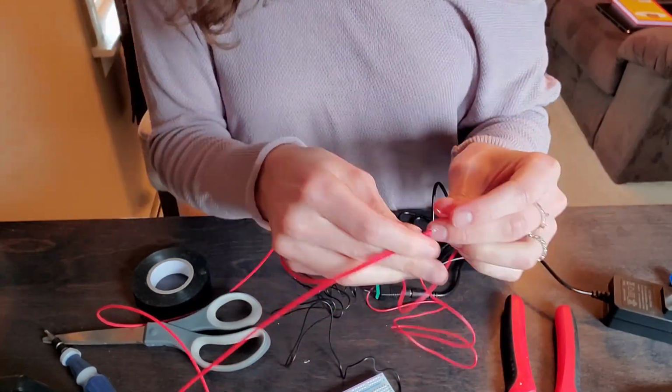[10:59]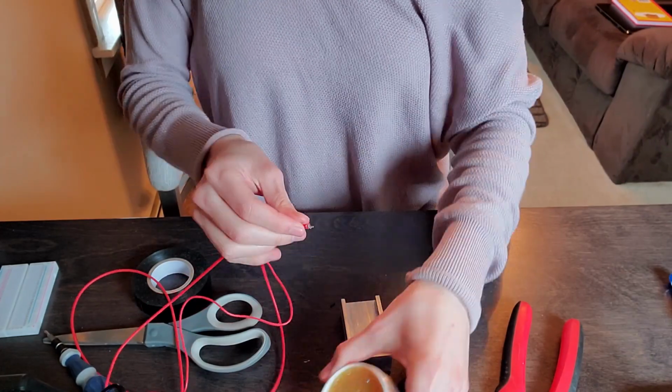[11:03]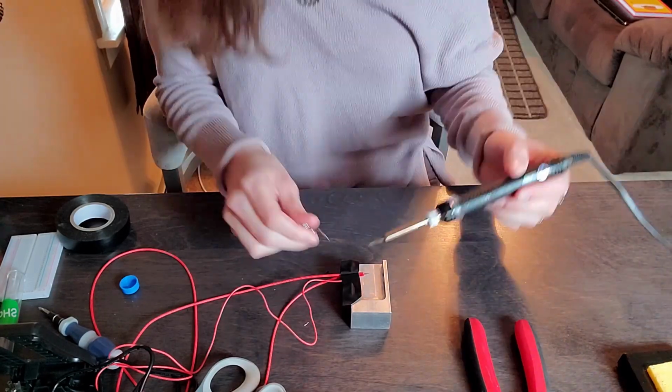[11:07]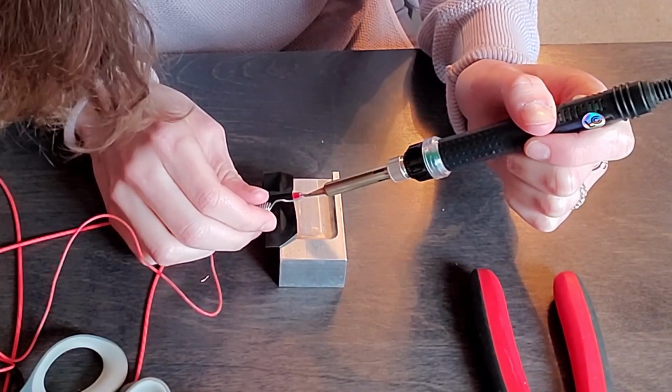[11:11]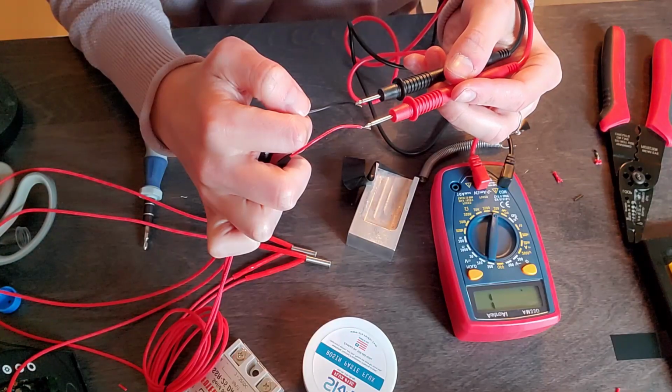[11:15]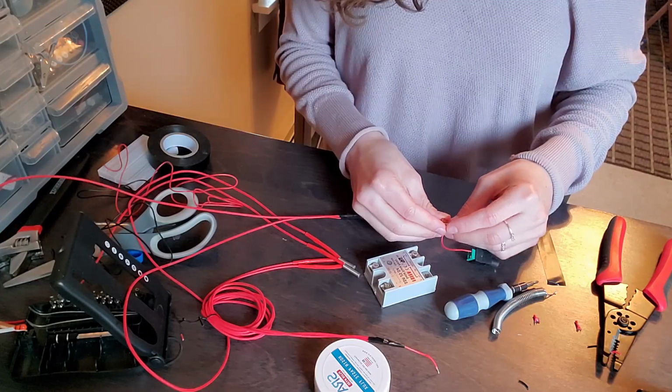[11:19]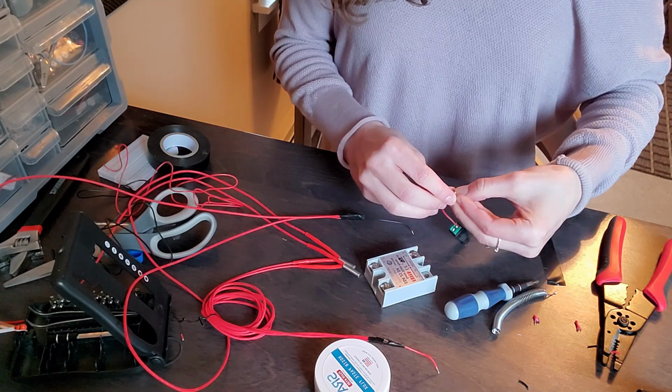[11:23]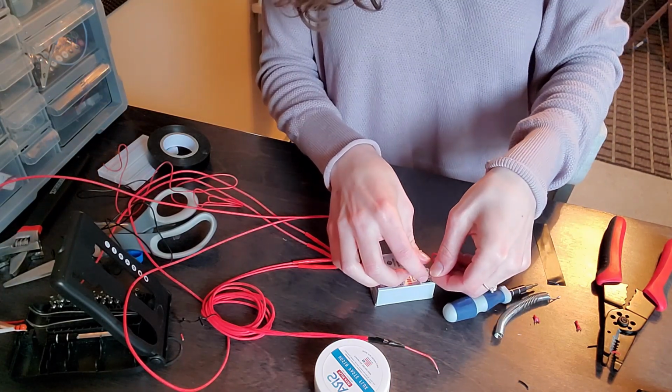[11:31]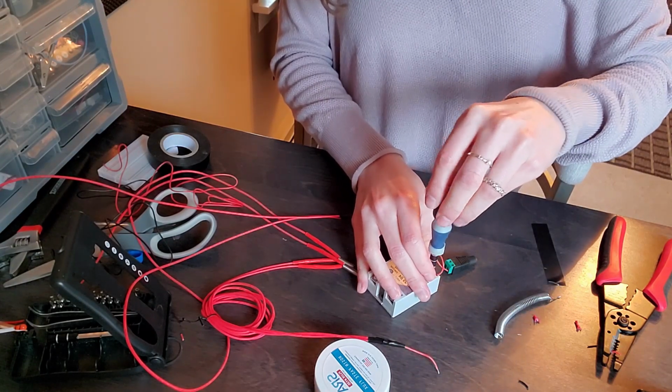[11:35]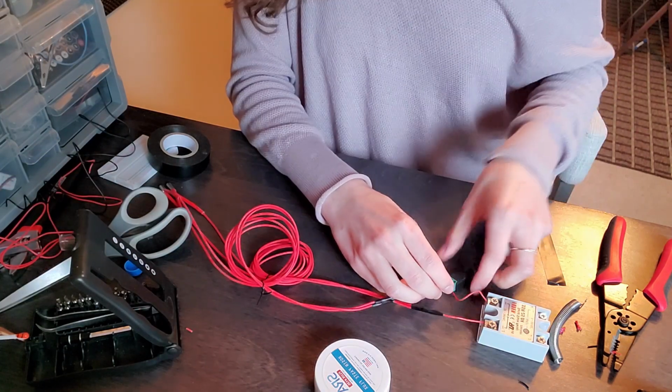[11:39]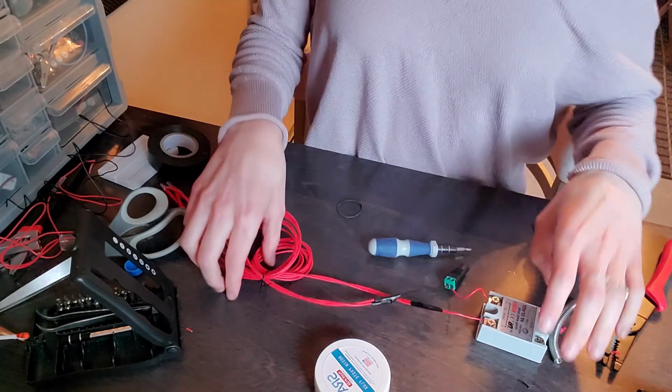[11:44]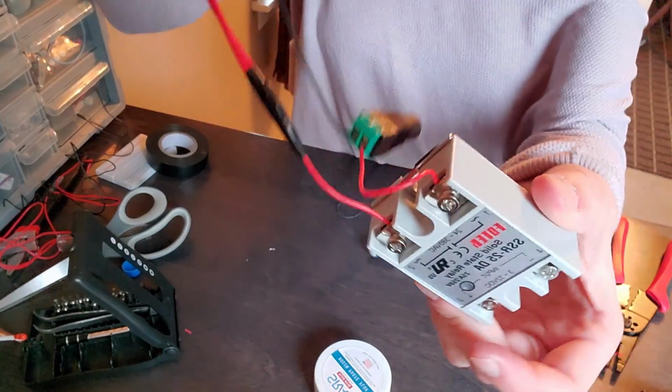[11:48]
All right, the heater circuit is done, and now we just gotta hook it up to the Arduino. It looks pretty good if I do say so myself. But I mean, what do I know? I'm just a disembodied voice.
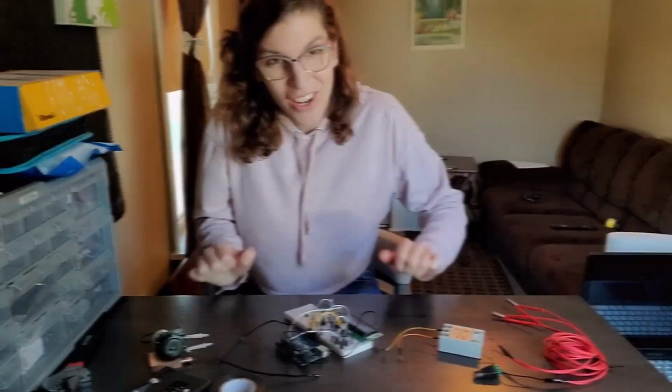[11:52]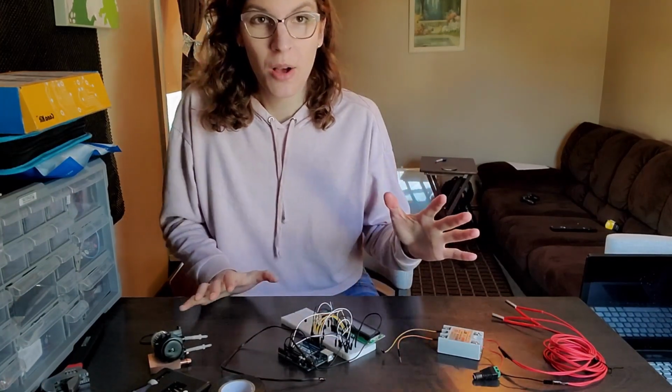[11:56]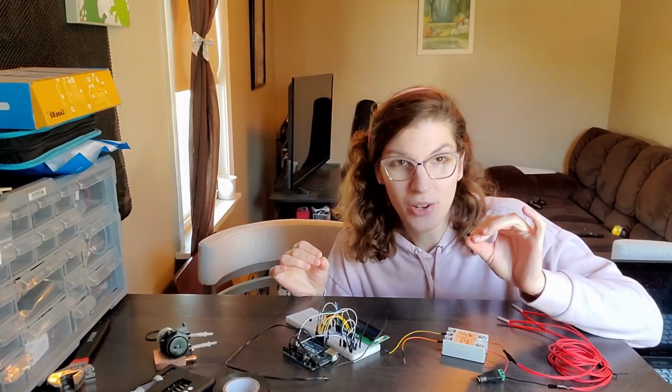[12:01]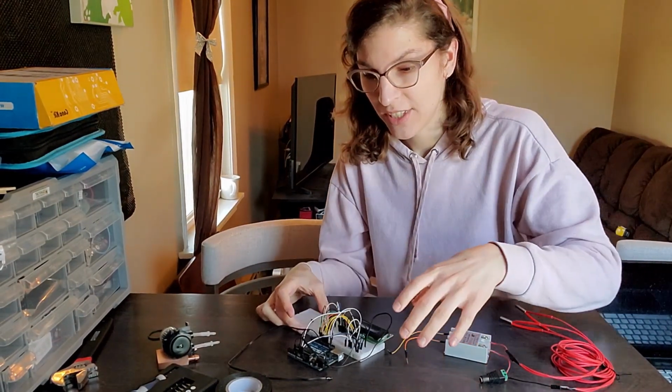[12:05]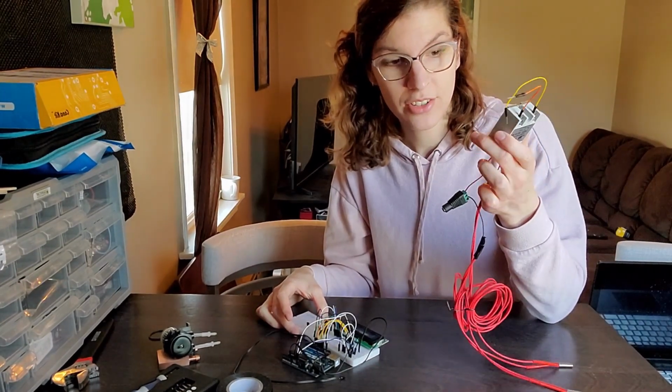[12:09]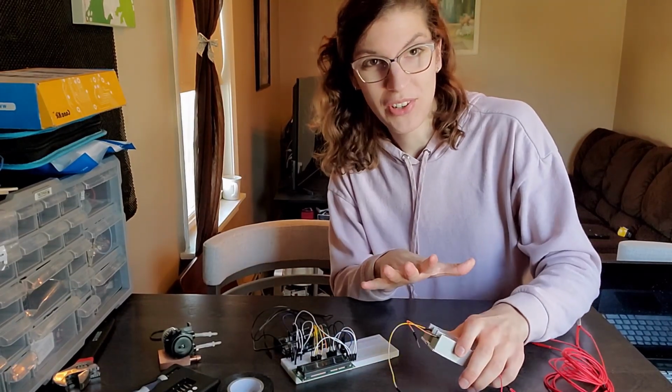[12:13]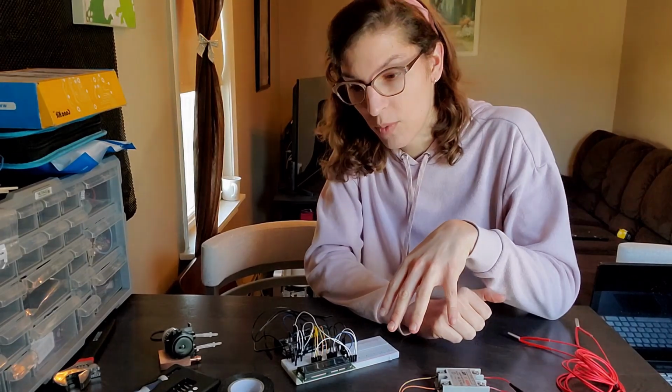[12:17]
What's up, guys? Okay, so we did it. It's been 2 weeks, but we made a ton of progress. Not only have we been able to successfully get a temperature sensor going, but we've hooked up our heater circuit. And now all that's left to do for 2/3 of it is to connect this to the board in a way that can be turned off or on.
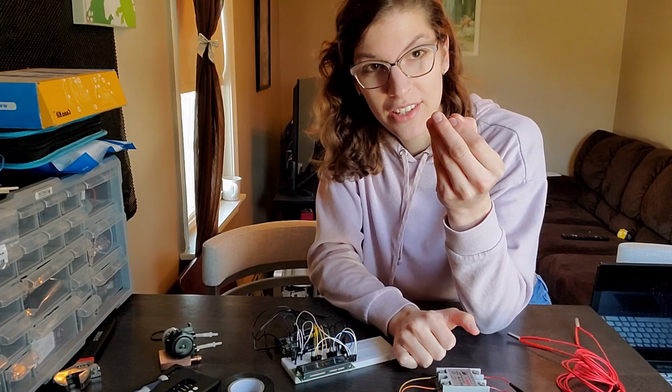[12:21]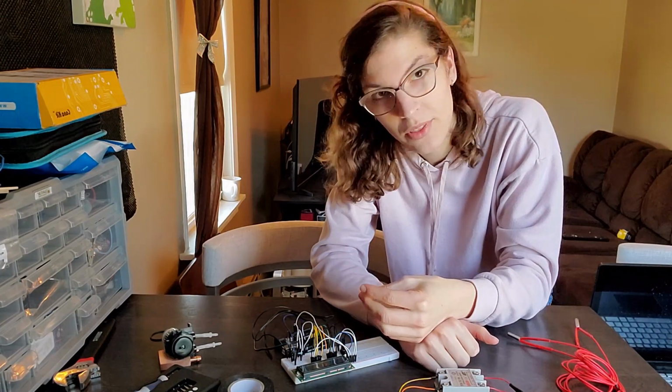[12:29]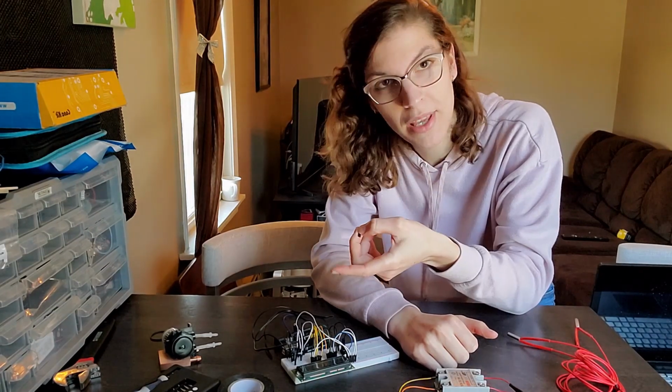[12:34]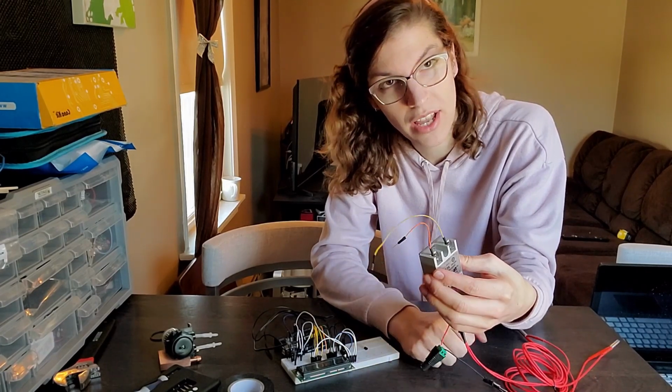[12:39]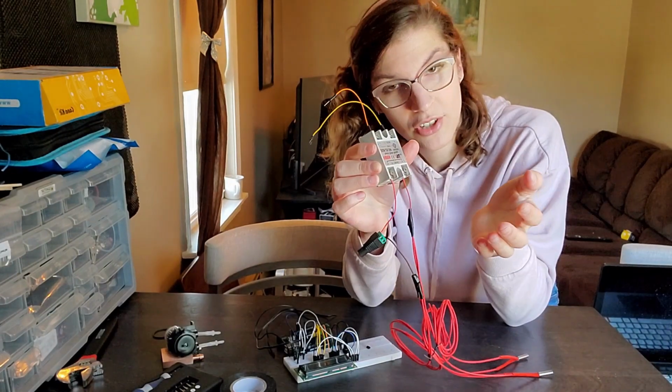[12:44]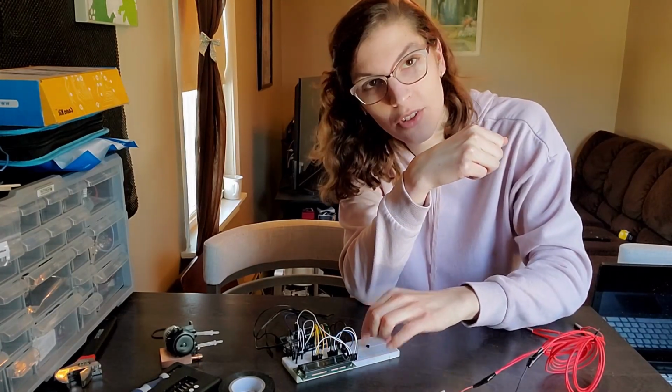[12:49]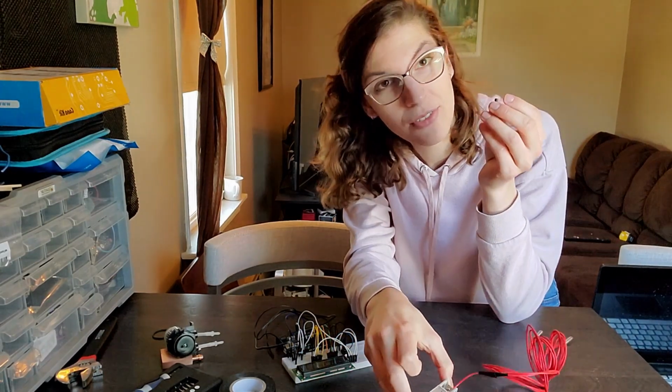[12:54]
The easiest way to do that is to use what's called a transistor. It's a little thing right here, and it can basically be used as a voltage switch. So this voltage switch is basically going to read a small input from one of the Arduino pins, and then output a 5-volt signal to the relay. The relay will then trigger turning on the heaters. If it wants to turn off, all the Arduino would have to do is remove that small signal going to the transistor. The transistor would then turn off the relay, and we wouldn't have the voltage anymore. So I'm really excited. So let's do this.
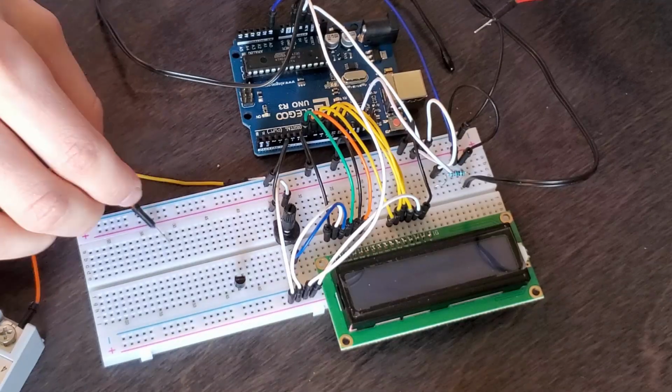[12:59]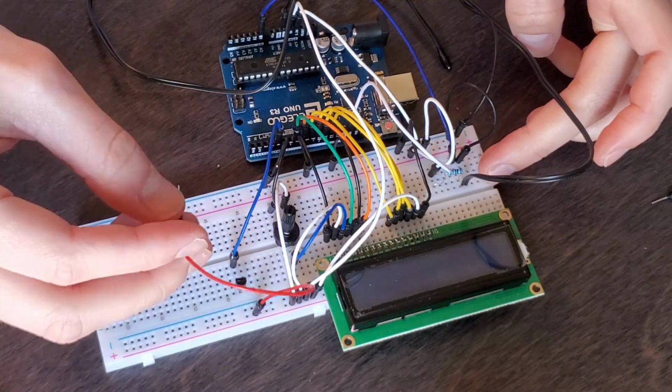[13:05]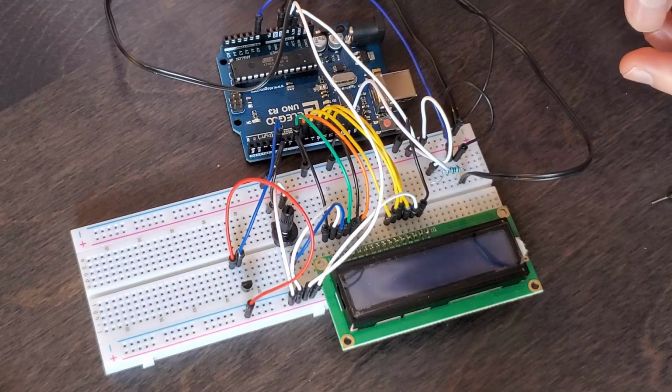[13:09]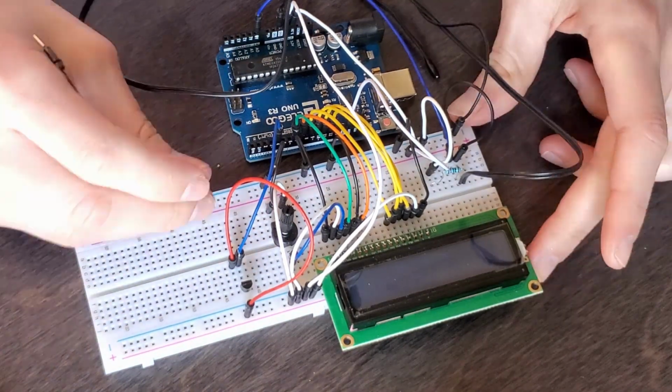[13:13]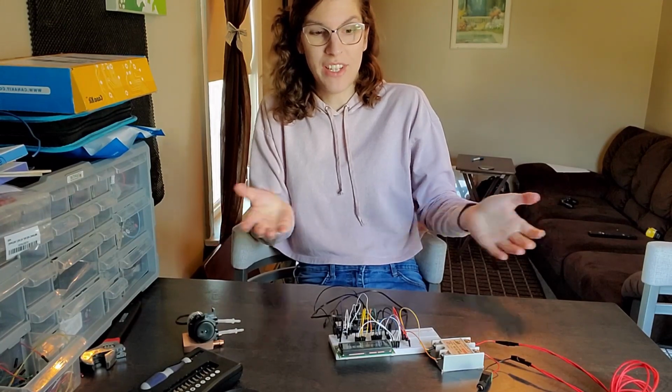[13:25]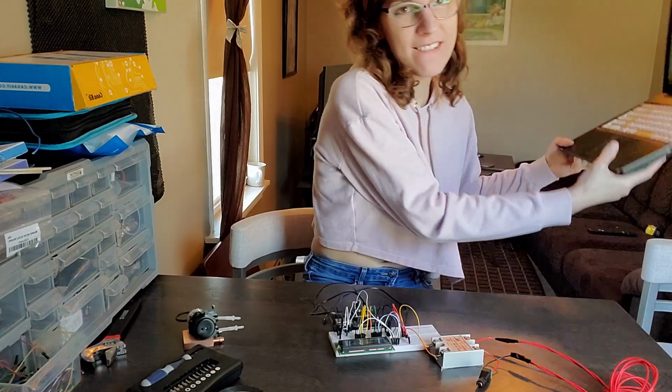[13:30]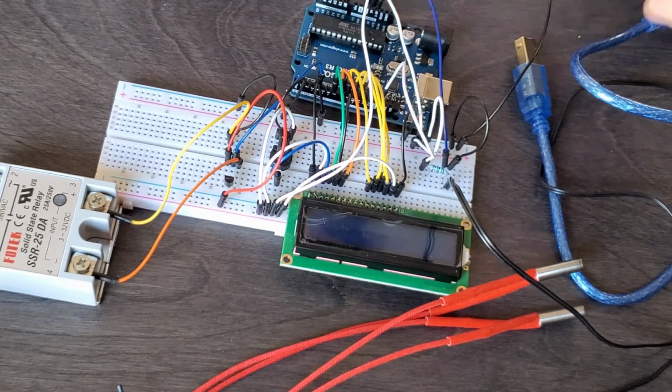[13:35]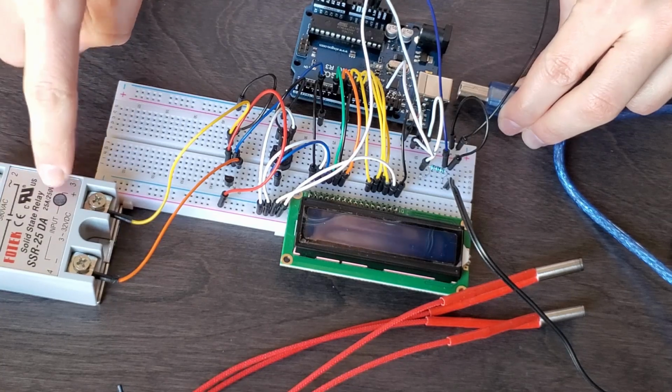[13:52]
All right, well, that was pretty easy. Now we just gotta check to see if it works. For that, code time. Okay, so the way I coded this up is that once I plug this in, it's gonna sense the temperature. And if the temperature is below a certain point, it's gonna turn on this relay. Now I didn't plug the heaters in, so we're not actually going to be heating this up. We're not setting fire to the table, but this light will show that current is actually flowing where it needs to flow. So we're going to plug this in and load up the new program and see if it works.
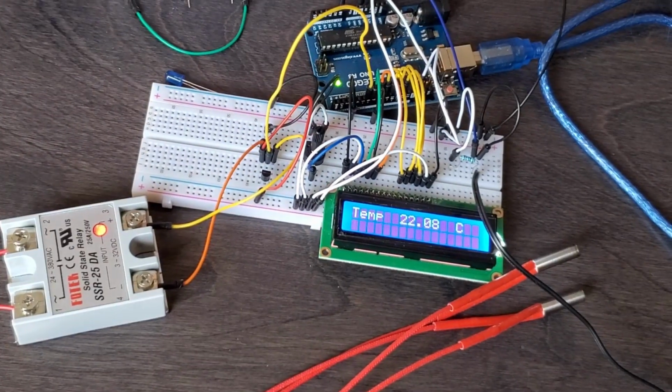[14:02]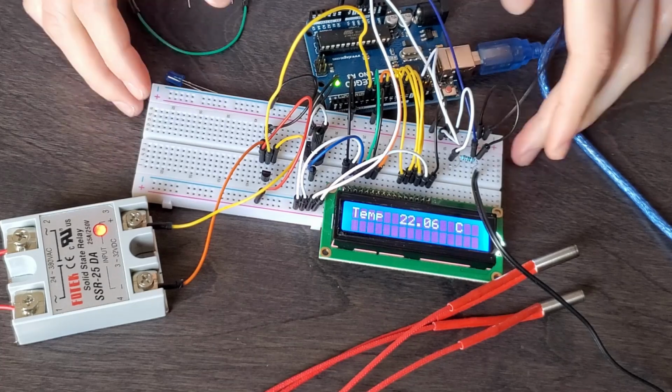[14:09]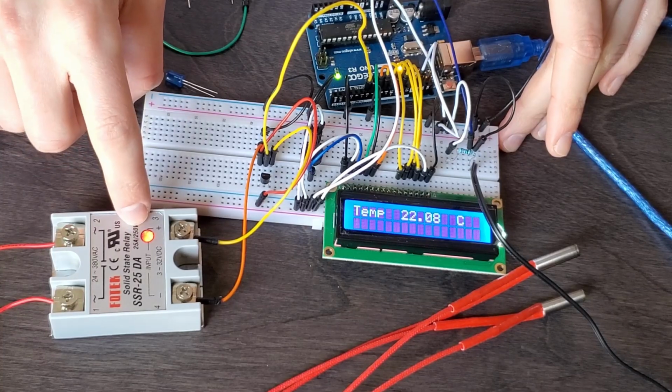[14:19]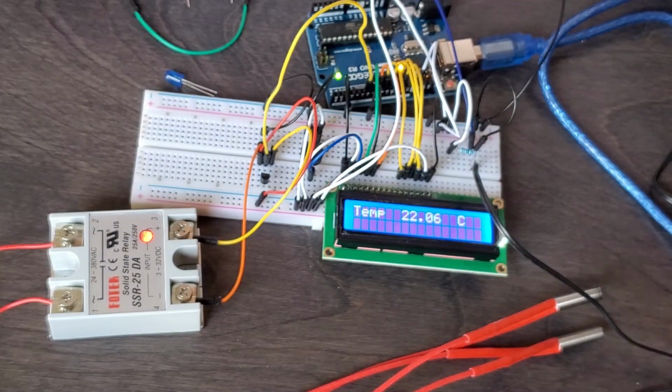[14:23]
I changed it to 23 degrees because it's too hot in here. So if the thermometer is less than 23 degrees, which it is, it's at 22.08, we're going to put power through this pin. The transistor will allow current to flow through, and that turns this relay on. Now, I didn't plug this in, so nothing's heated up yet. But now, watch what happens if I make this go above 23 degrees by holding it.
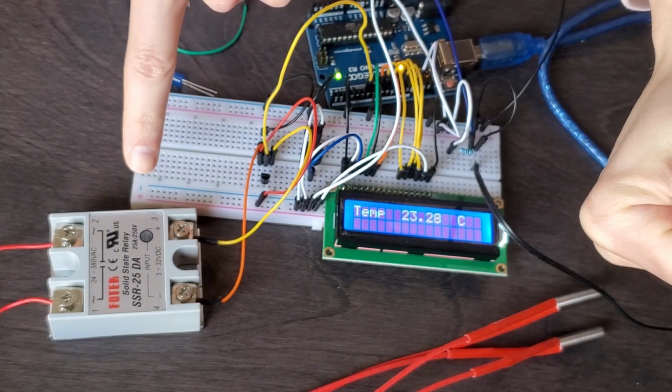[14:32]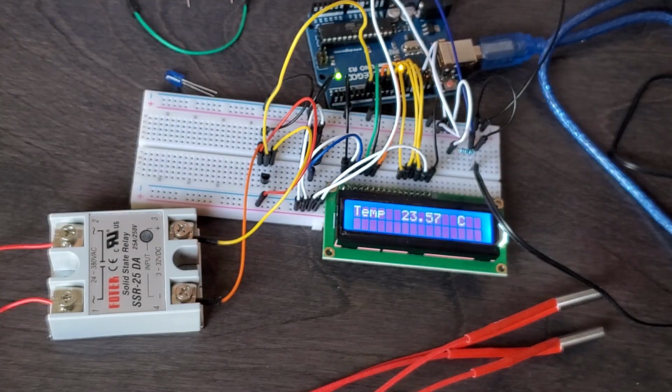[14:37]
Holding it, it's going up in temperature, 23 degrees. Bam. The light is gone. Now, if I let it cool back down slowly, as soon as it gets below 23, the relay turns on. So our circuit is working.
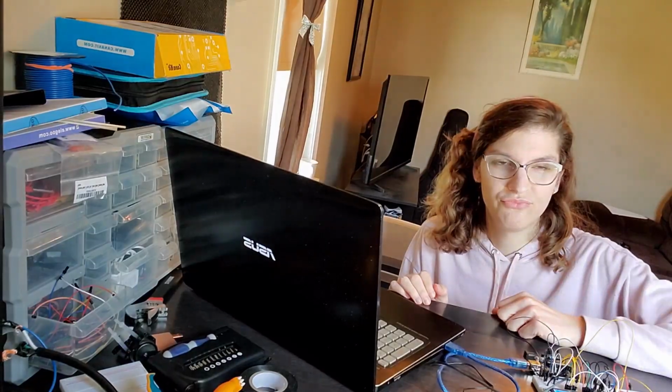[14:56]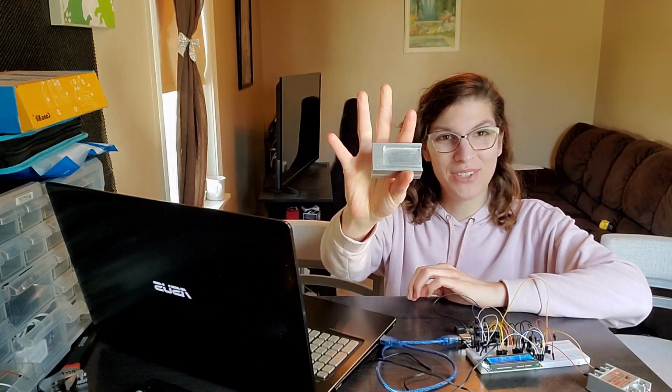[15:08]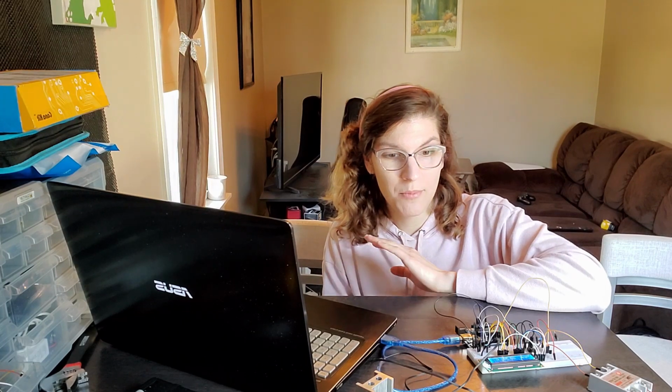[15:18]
All right, so this has been an incredible 2 weeks. Really good start. We went from having no idea what we were doing and just following an internet post, machining a random steel block, which was super cool, but finding out that it just wasn't going to get the job done with the math. Then we did what we should have done in the beginning and actually did the math, figuring out a much safer and more effective way to get this PCR reaction. Then we wired up our temperature sensor, which works swimmingly, by the way, and hooked it all up to the relay, which is going to power the heaters.
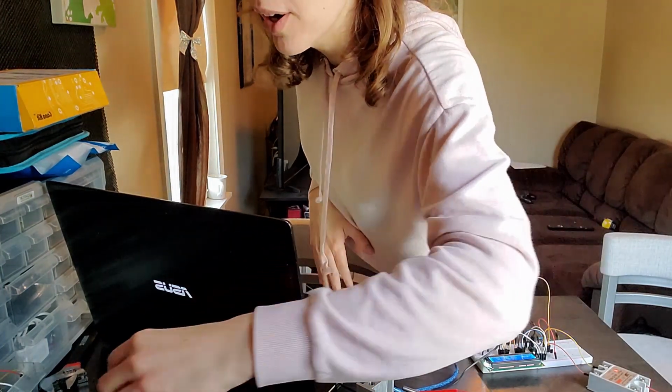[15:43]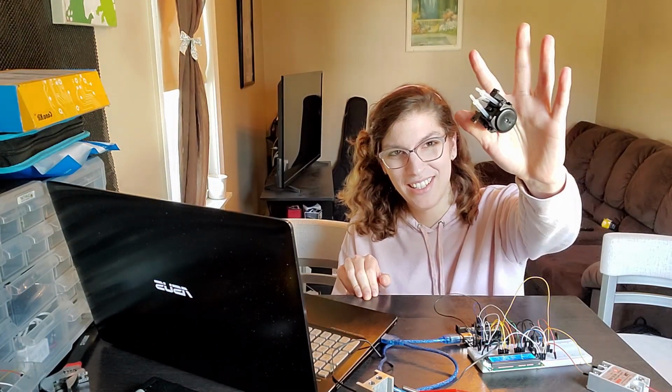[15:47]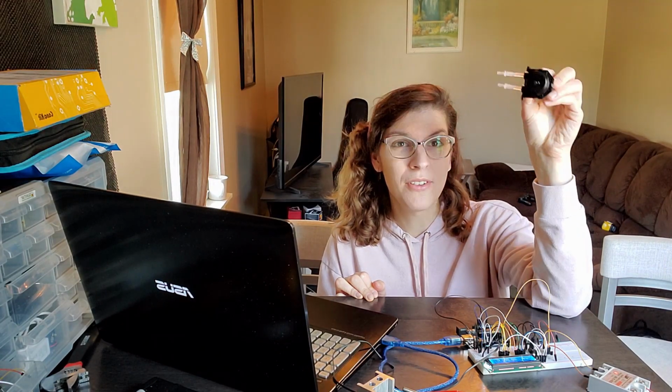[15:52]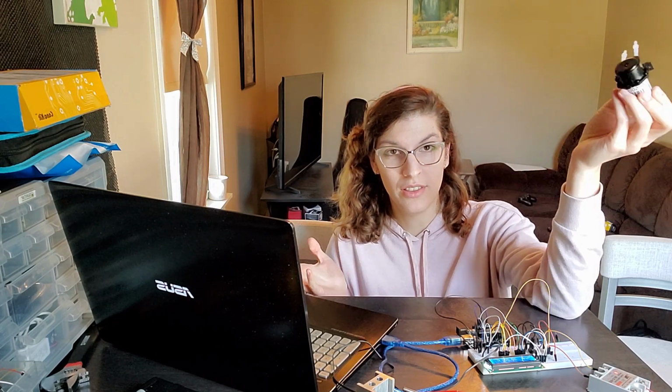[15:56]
So in the next episode, we are going to take this and finish it. We're going to add our pump circuit. Where are the pumps? Where are you, pump? We're gonna put the pump in. We're gonna have a pump connected to this entire thing so that if the temperature is above a certain amount, it's going to pump cooling water through the apparatus.
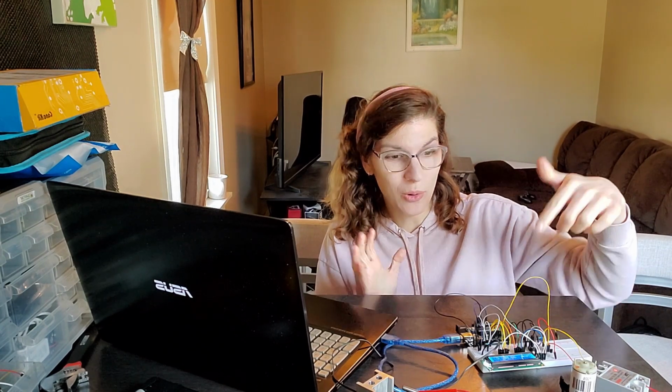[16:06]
Hopefully by next week, the new part should come in from the Artisan's Asylum. And we'll 3D print a chassis up for this thing to hold it all together, and we should have our own PCR machine.
I'm so excited. A huge thank you preemptively to the guys at the Artisan's Asylum. You guys, I wouldn't be able to machine this aluminum without you. I'm just a girl in a rented house with no access to machine tools. So thank you for that. I can't wait to get this working and installed, and then move on to actually running PCR reactions on this.